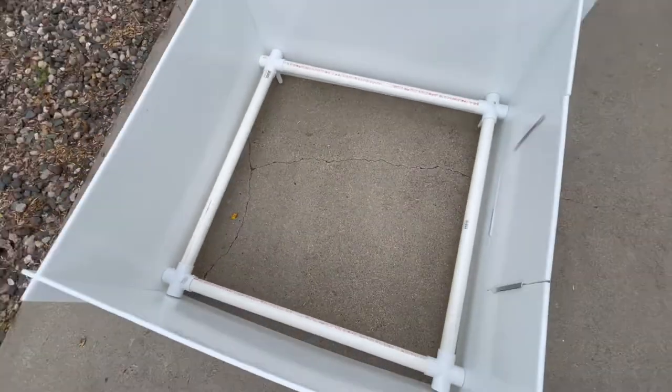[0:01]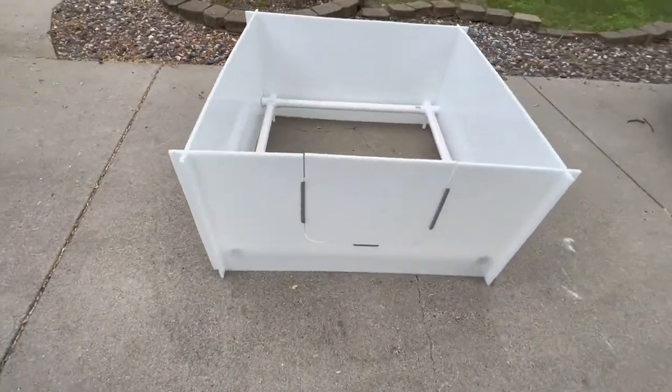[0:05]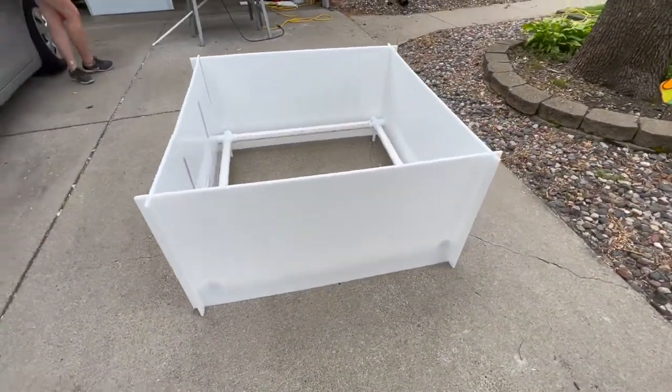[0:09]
Hi, so this video is going to show you how to make a whelping box for a pregnant dog to have her puppies in. And this is the box that we made.
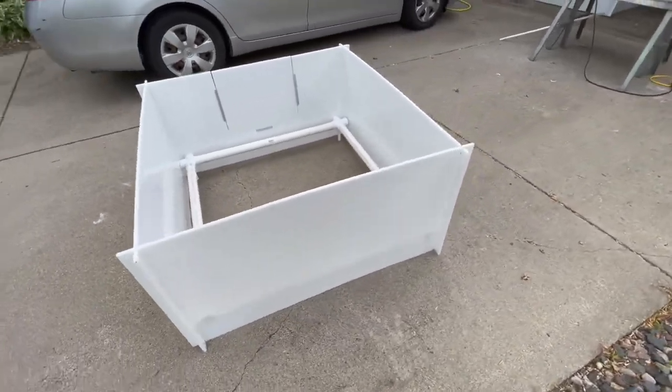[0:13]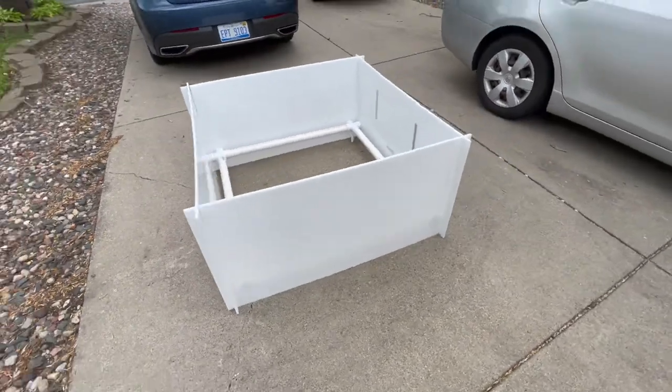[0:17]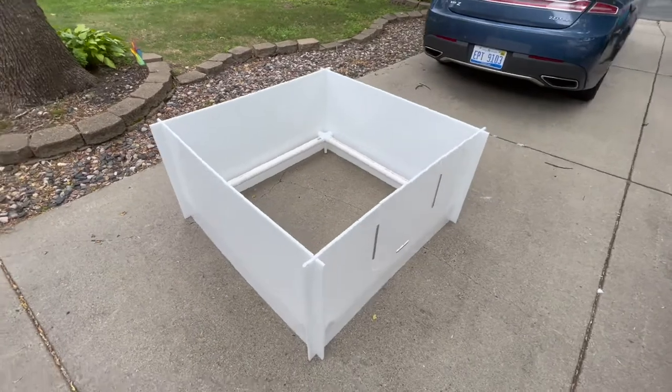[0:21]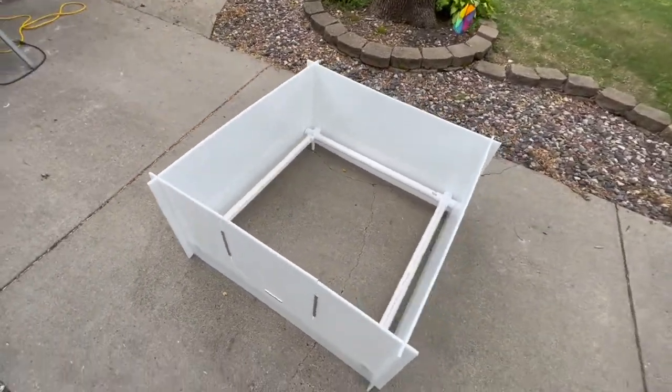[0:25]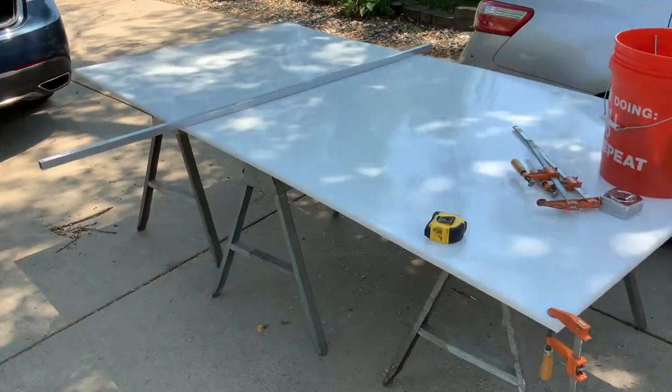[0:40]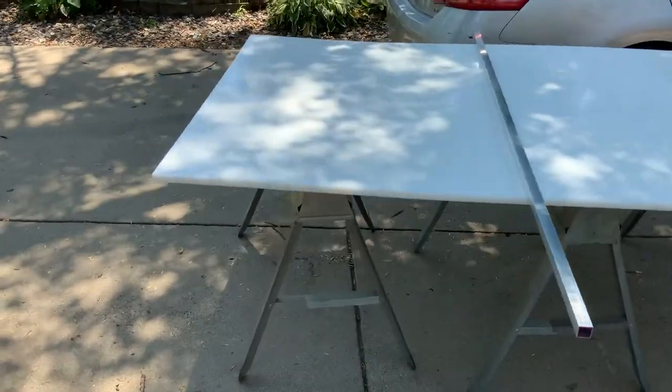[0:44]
So here is our supply list, so everything that you'll need to make the box, including all of the measurements for the plastic and the PVC pipes, and all of the tools we used. So here we have all our supplies set up to start making the cuts.
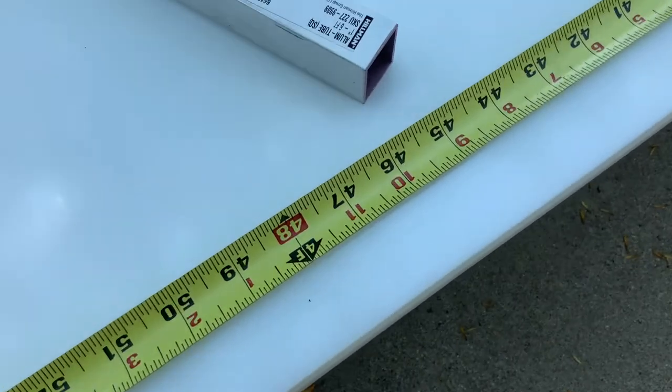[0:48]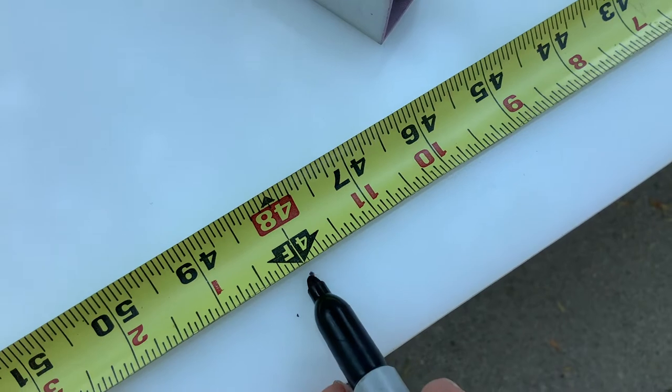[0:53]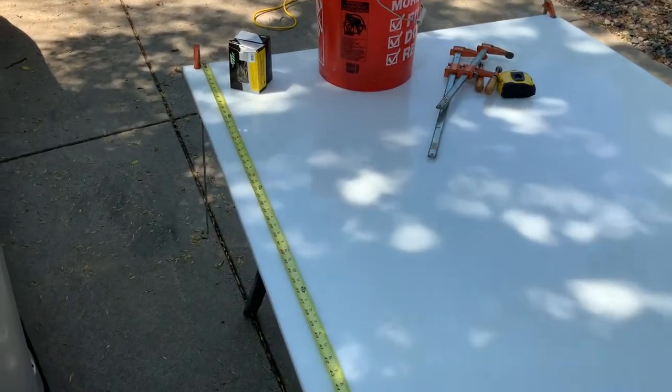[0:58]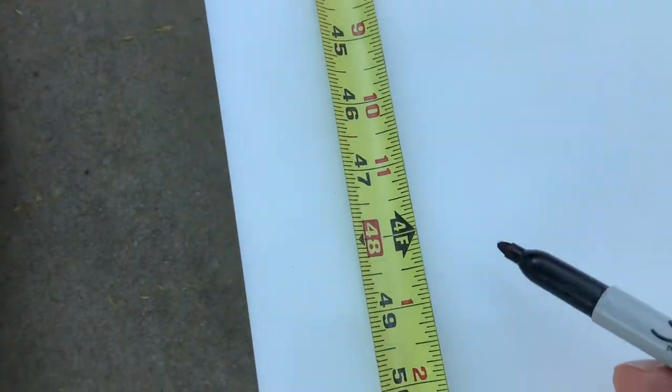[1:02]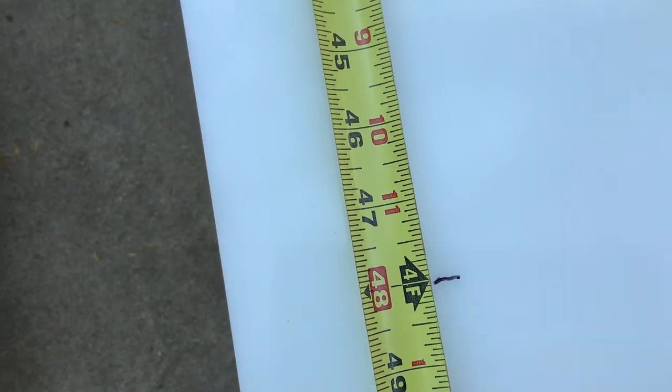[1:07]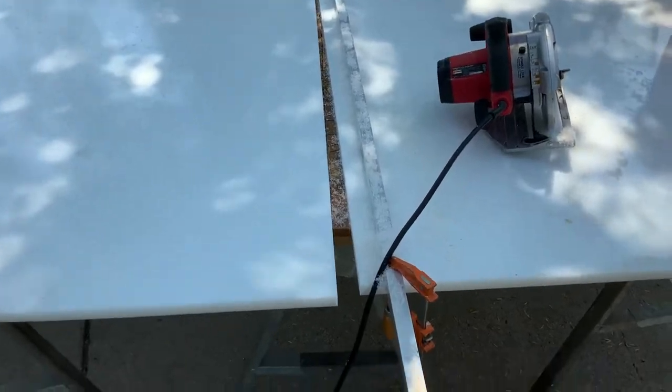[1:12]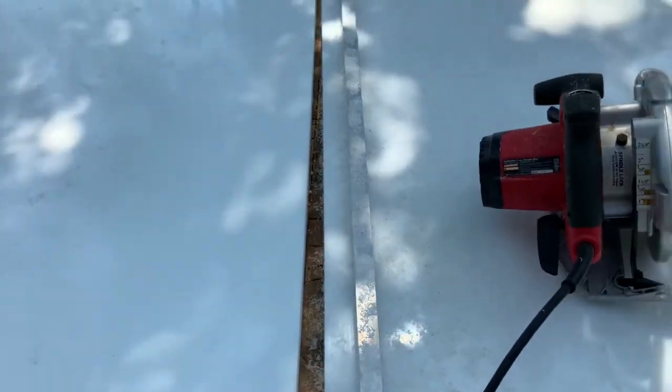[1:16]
So you're going to want to mark halfway at 48 inches for the first cut. And then you're going to go to the other side and mark 48 inches on that side as well. All right, so now that we cut that, we have our 4x4s, and now we're going to make these into 2x4s.
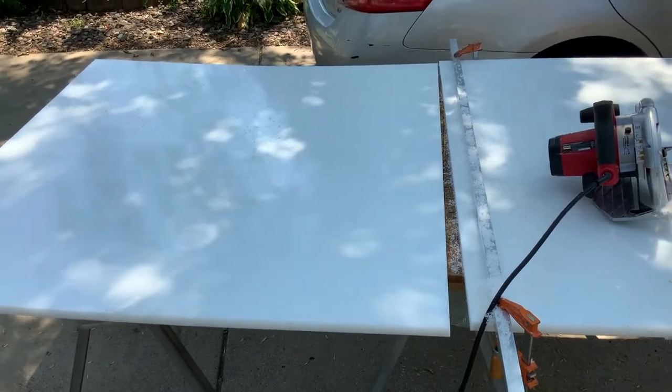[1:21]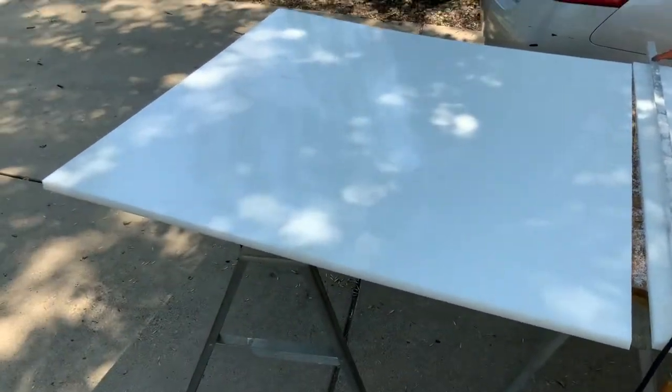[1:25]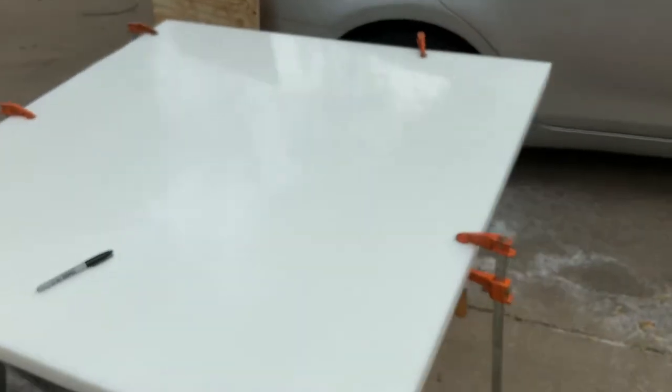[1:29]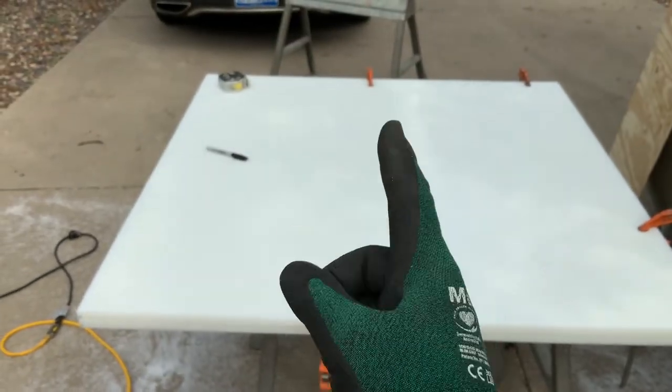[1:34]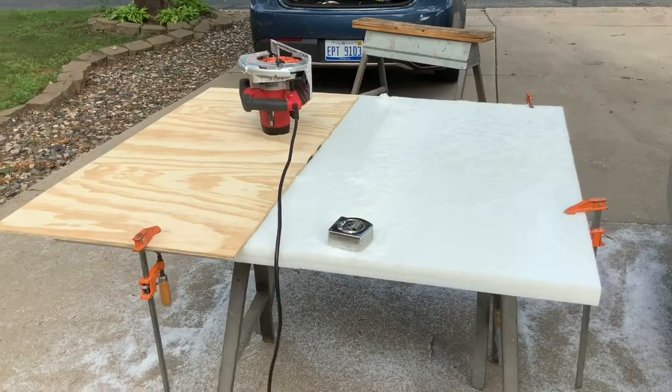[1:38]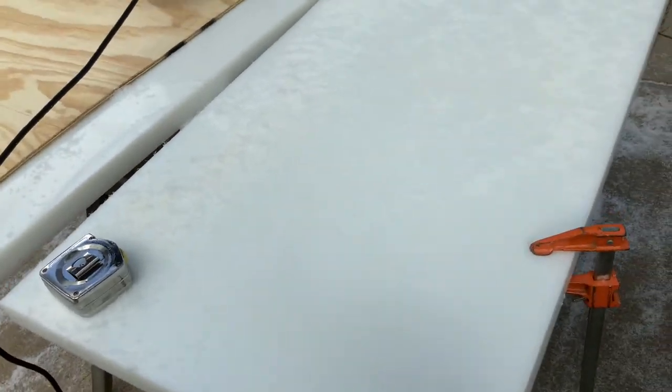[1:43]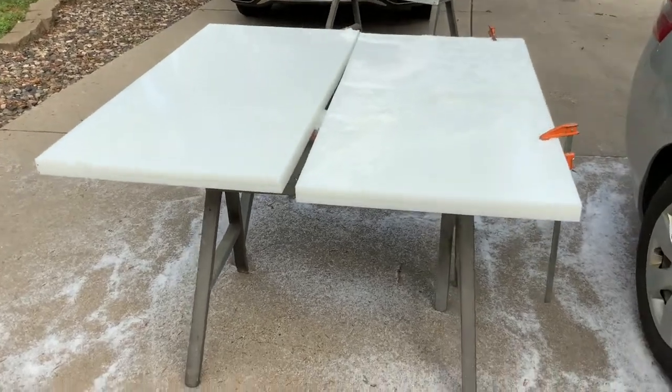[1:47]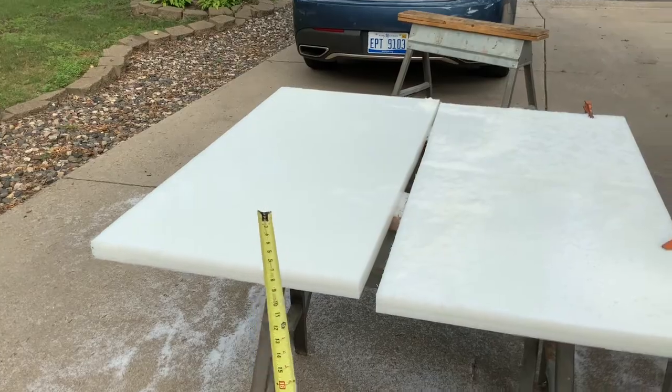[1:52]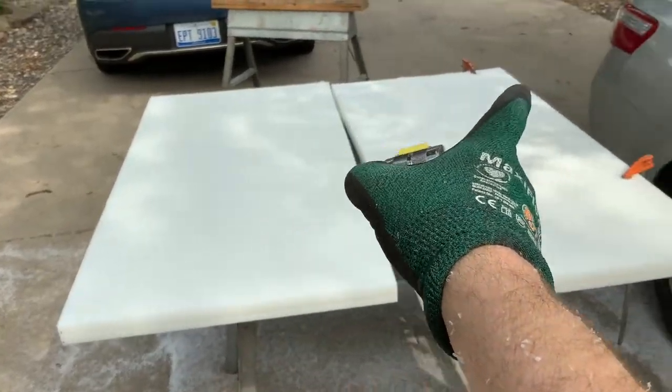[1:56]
So now we're going to turn these into 2x4s, so mark at 24, the halfway point, and then that's where you're going to cut down the middle. So then here is the cut we made. And now we have our 4 foot panels. So once again, in this video, we're making two whelping boxes, so there's a whelping box there and a whelping box there. So now we're going to cut the interlaces so the panels are able to go together.
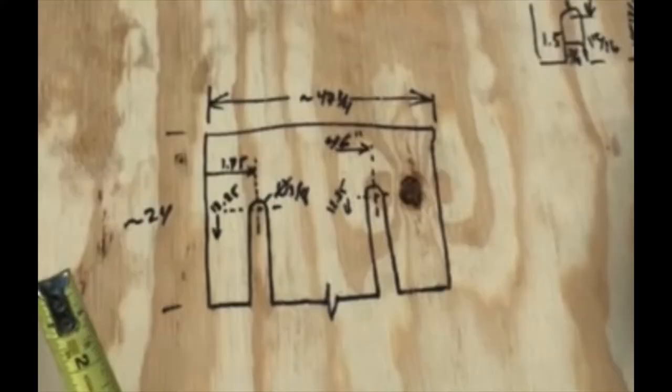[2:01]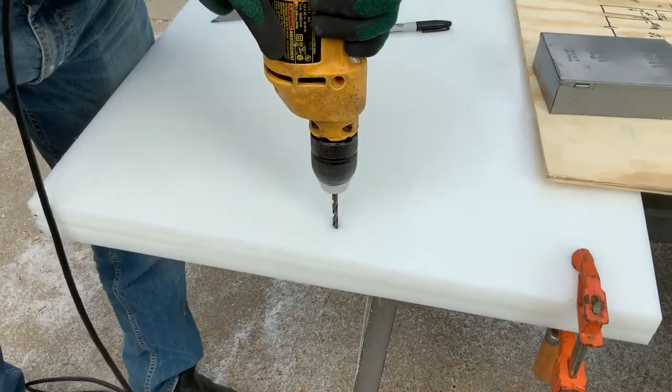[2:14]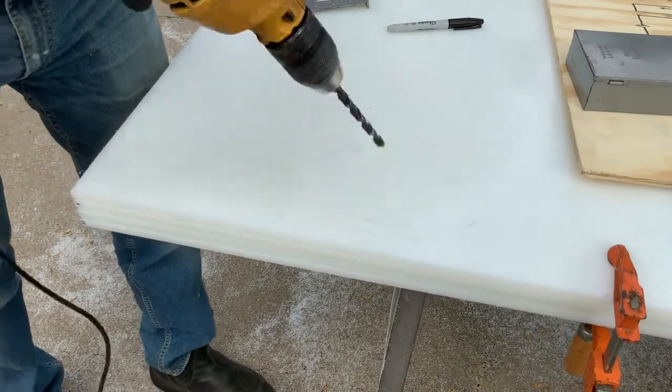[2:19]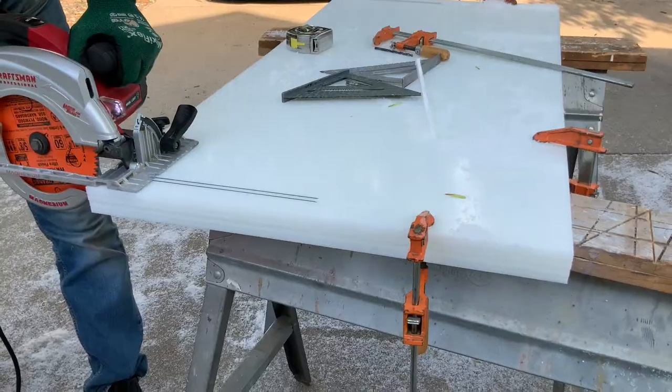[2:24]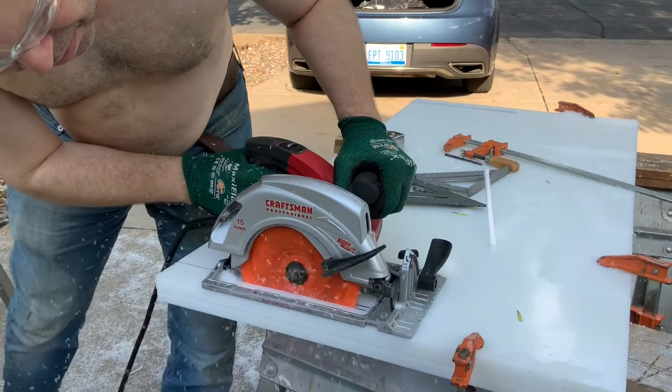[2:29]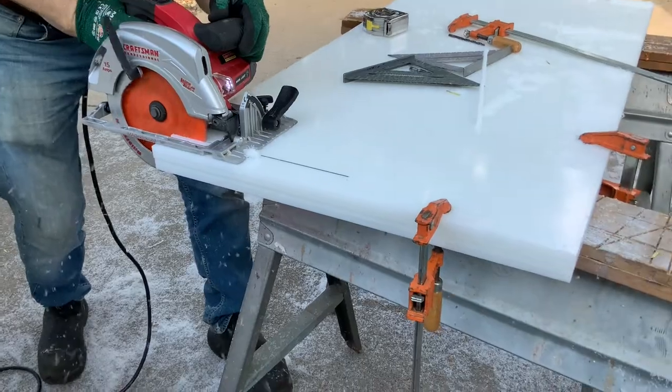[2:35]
So here is the diagram for the interlaces. They are 1/2 inch wide, 12 inches down, and 1.5 inches from the side. So here we are making a guide for the end of the interlace, and we start with a smaller bit and we use bigger bits as we go on. So now we made an outline and we are making the cut. And you're going to repeat this on the rest of the panels.
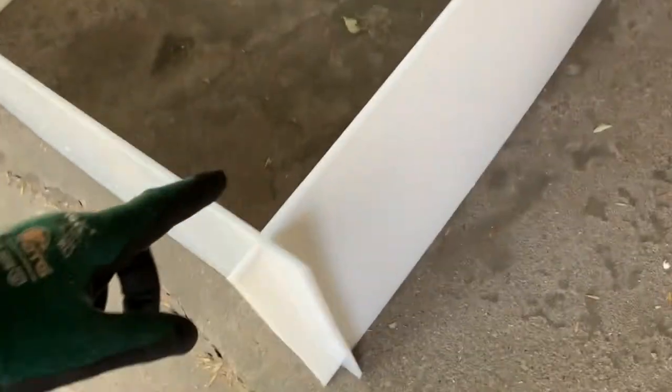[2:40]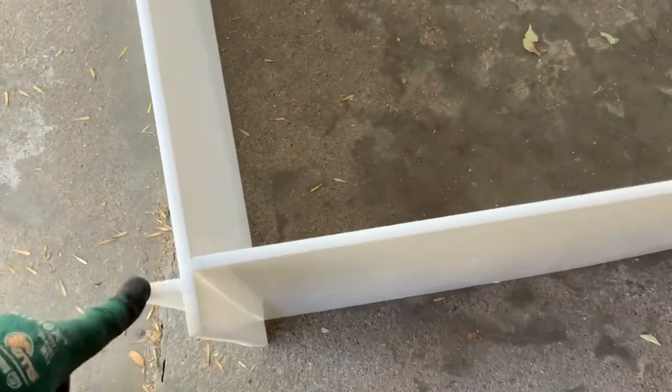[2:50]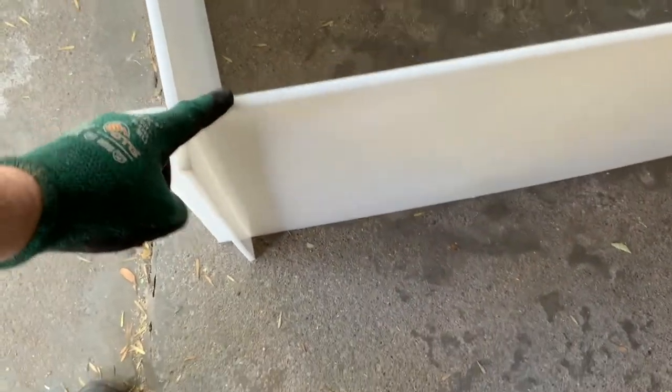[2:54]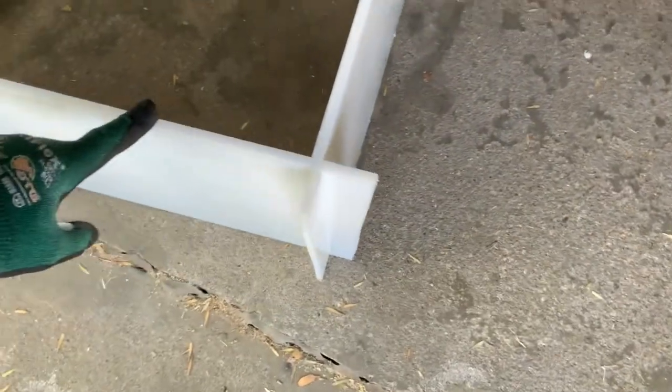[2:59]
So now we're gonna get ready to cut the mama door. And when you choose which one you're gonna cut it on, you wanna make sure that it is solid at the top, so the cut is at the bottom instead of the top, so it doesn't have a weak point like that one does. Because we want to make sure that the door will still be able to go in and the box will stay standing. So you're either going to want to choose that one or that one.
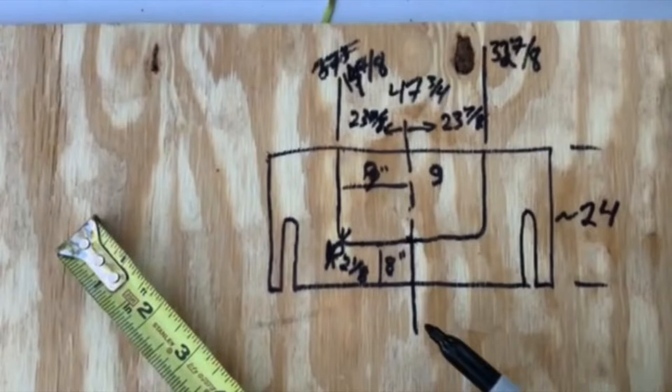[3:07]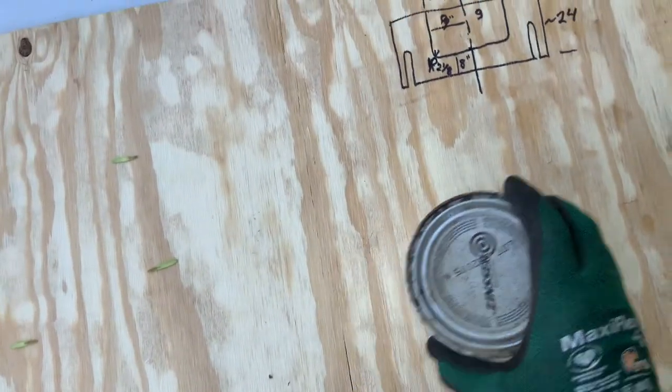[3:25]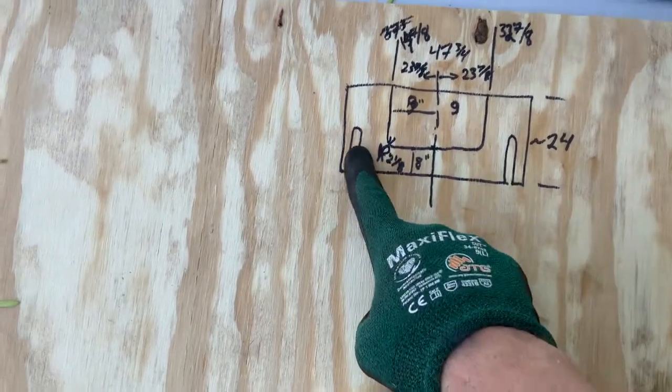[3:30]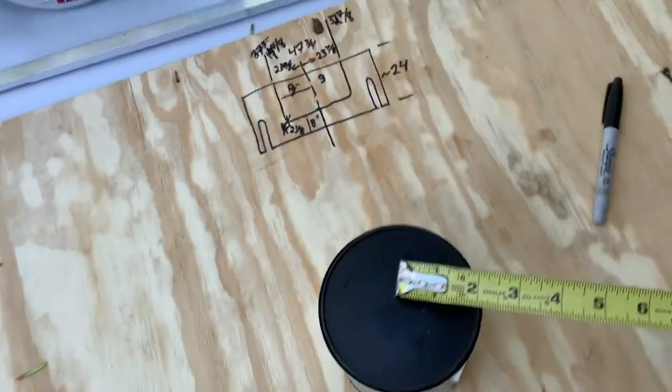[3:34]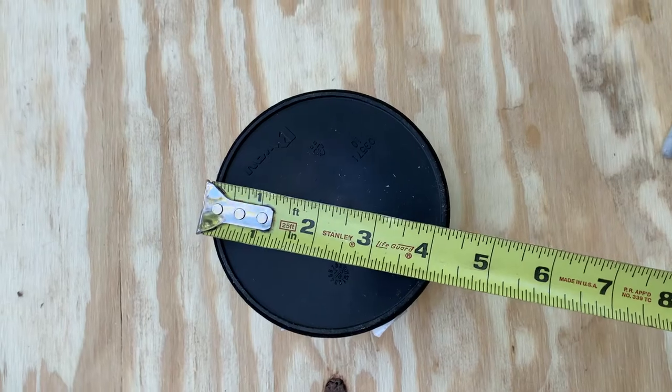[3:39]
So here is our diagram for the mama door. It's 8 inches from the bottom, so the puppies can't get out, but the mama can still come out. It's 18 inches wide and then 16 inches tall. And we didn't have a fancy saw to cut the corners, so we used a can to make the outline. So the diameter of this can is 4 1/4, so the radius is 2 1/8.
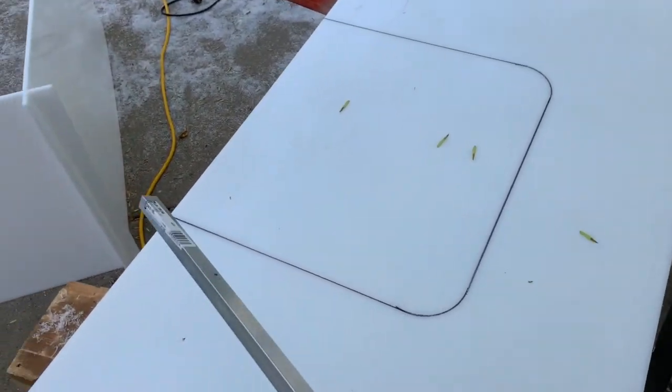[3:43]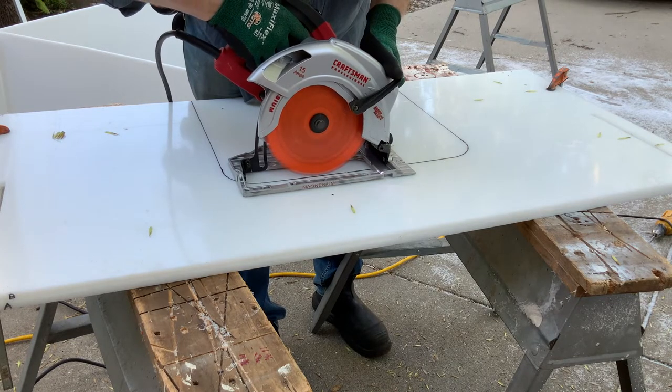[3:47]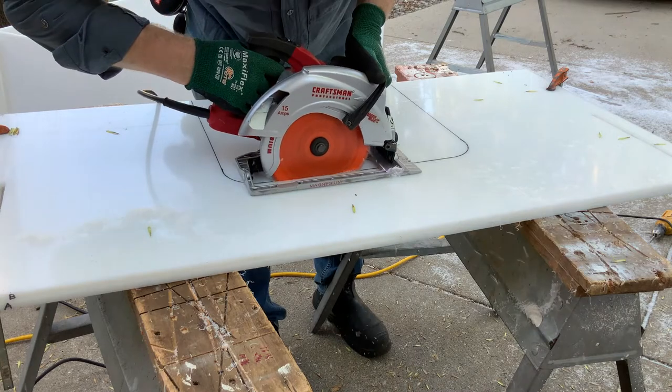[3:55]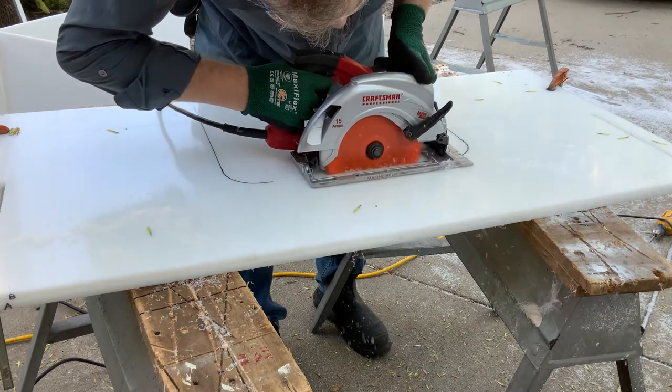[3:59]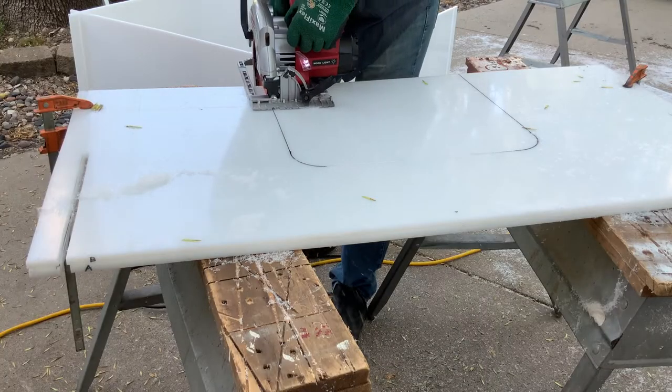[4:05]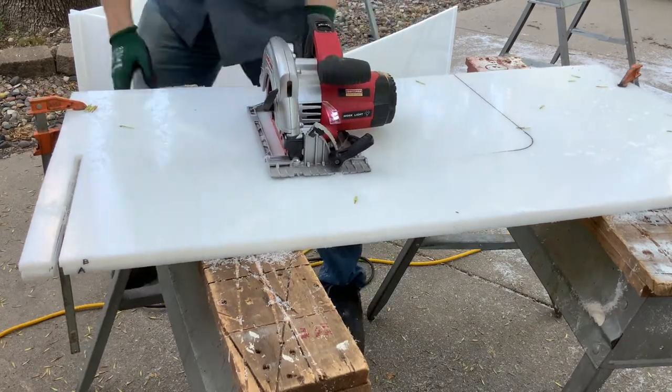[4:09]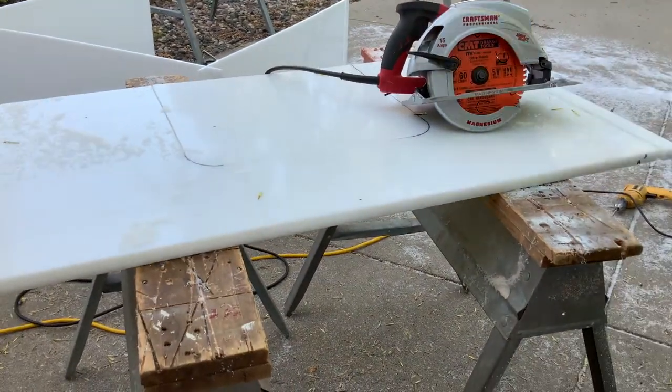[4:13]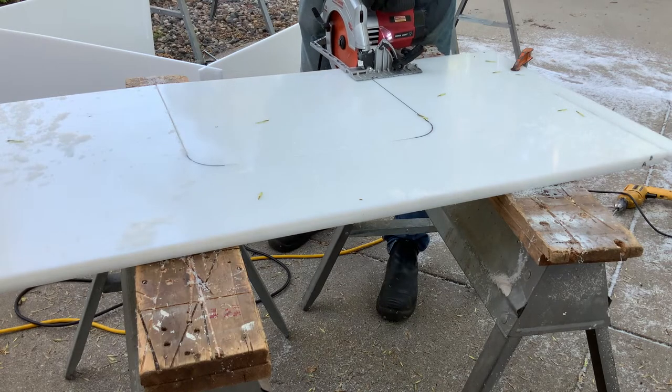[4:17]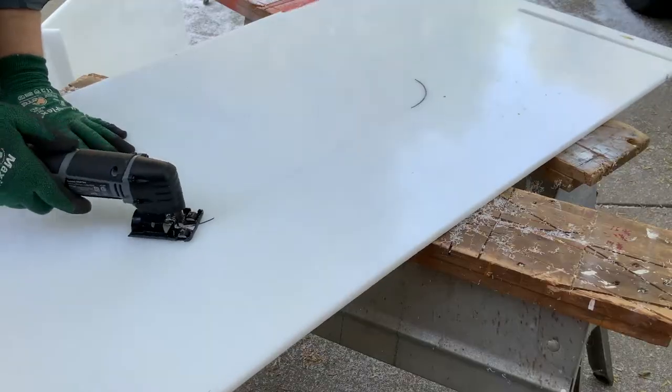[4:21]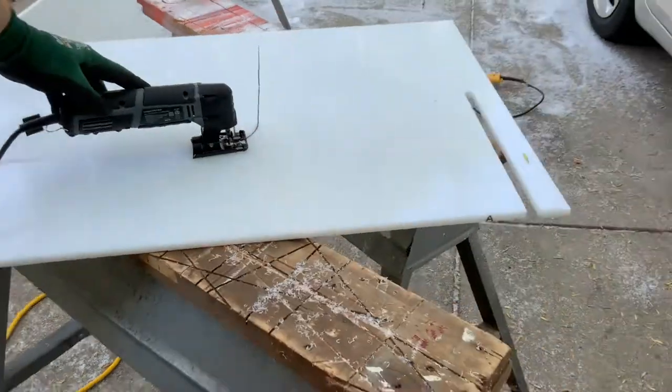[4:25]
So as you can see here, the lines are all traced out. So now just cut out on that outline. We used this saw to cut the straight lines, and then a smaller handheld saw to cut out the curves. So now we're using a smaller handheld saw to make sure the corners are nice and round like we want them to be.
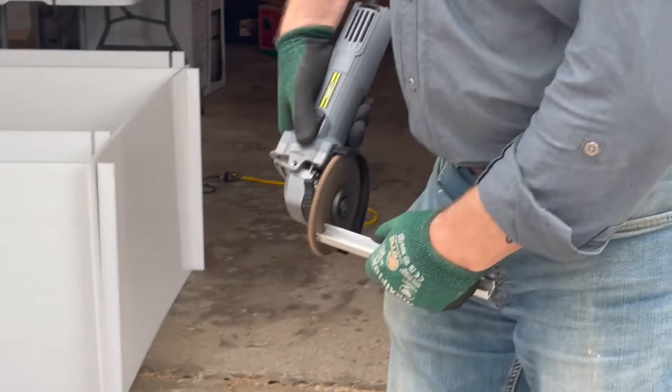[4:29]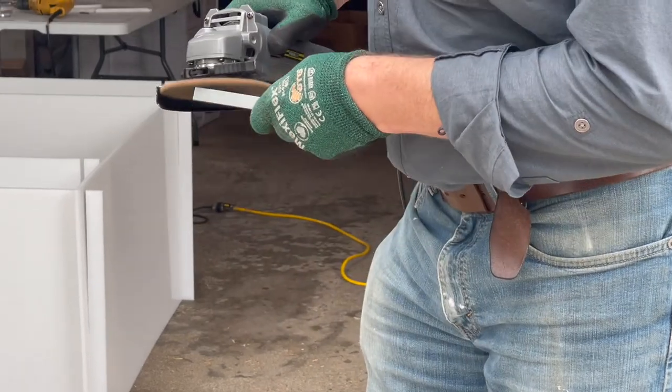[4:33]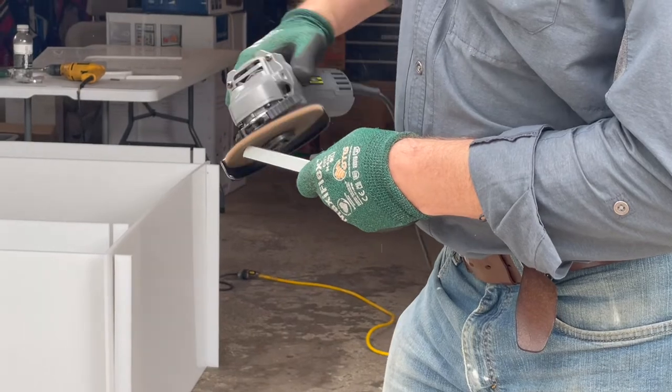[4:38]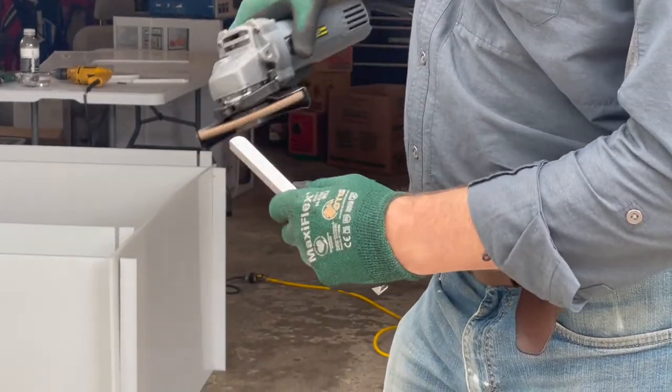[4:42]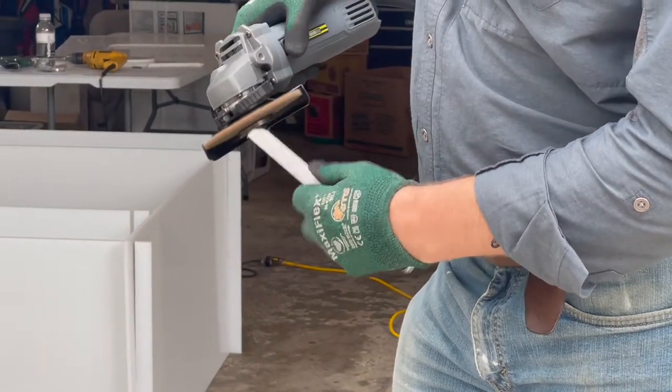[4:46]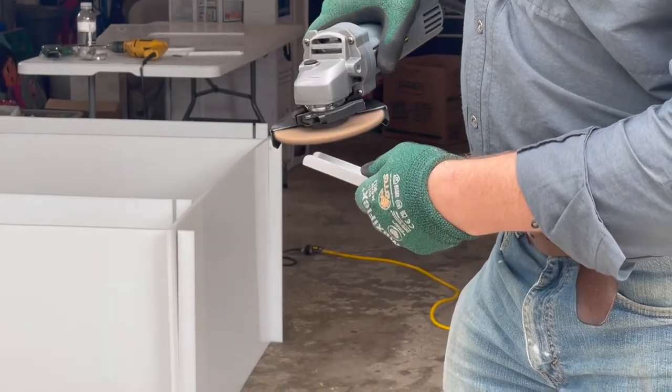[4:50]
So now we are sanding down the channels to make the corners rounded so they can turn into our door guides so we can put them on the door. So we're just using this electric sander, and you can see there we are rounding the corners. And you're going to want to do this for each of the three door guides.
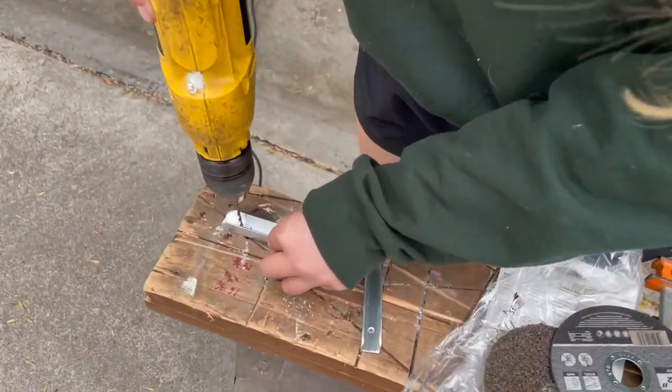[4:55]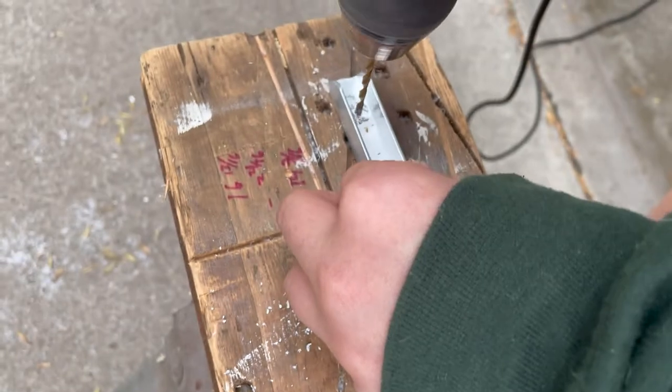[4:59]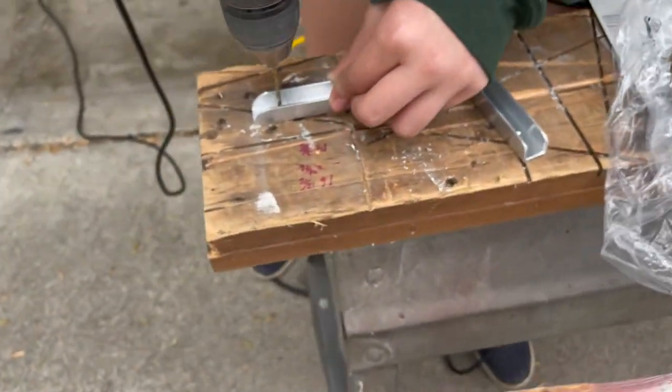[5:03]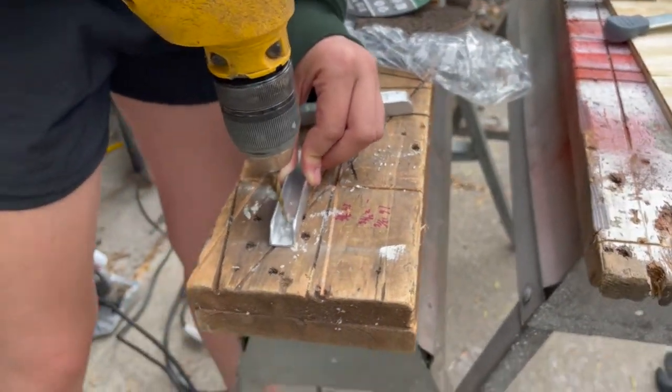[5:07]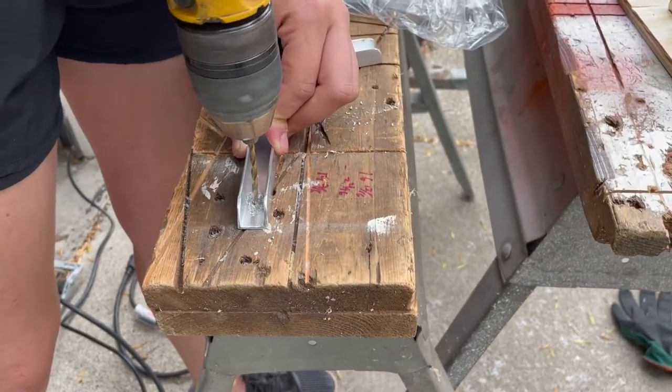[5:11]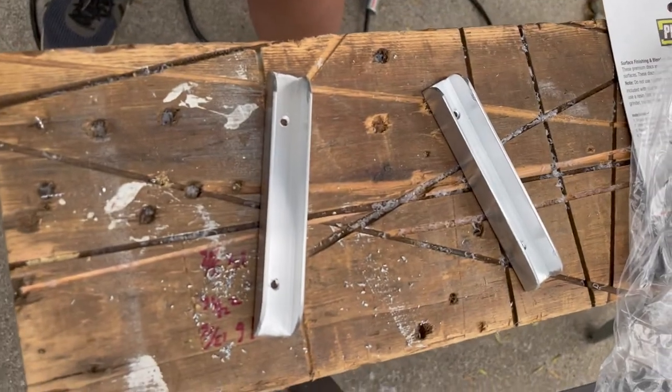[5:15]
So now you're going to want to drill 2 holes on each end of the aluminum channels so that this will allow them to be attached to the door when we screw them onto the door. And the important thing here is that you're making sure it's in the exact middle of the channel so it sits nicely on the door. And there are the finished ones.
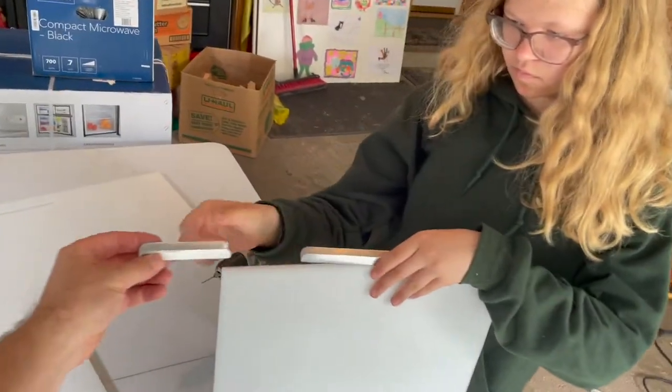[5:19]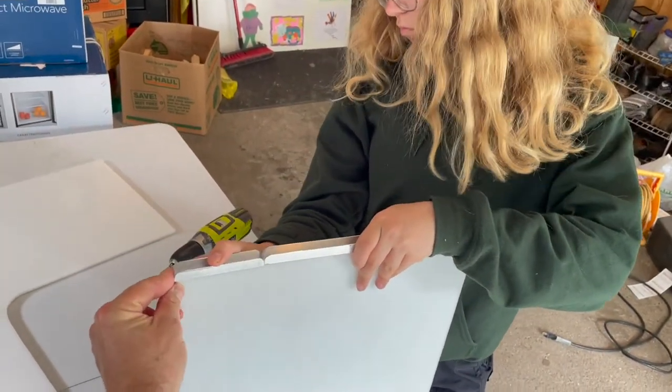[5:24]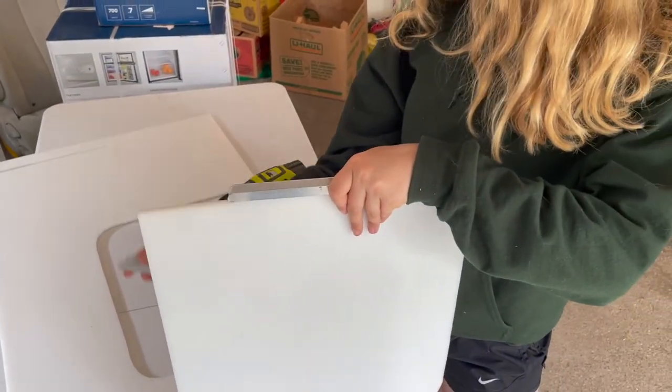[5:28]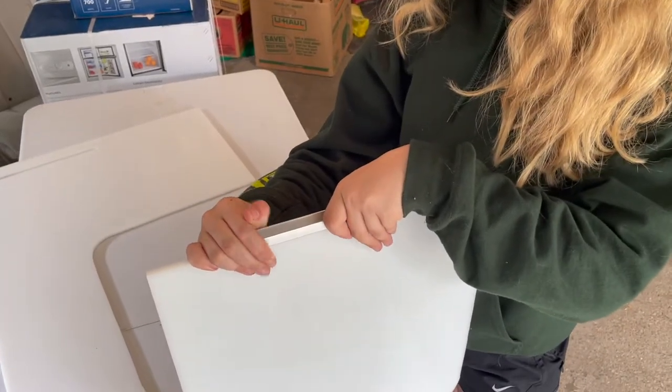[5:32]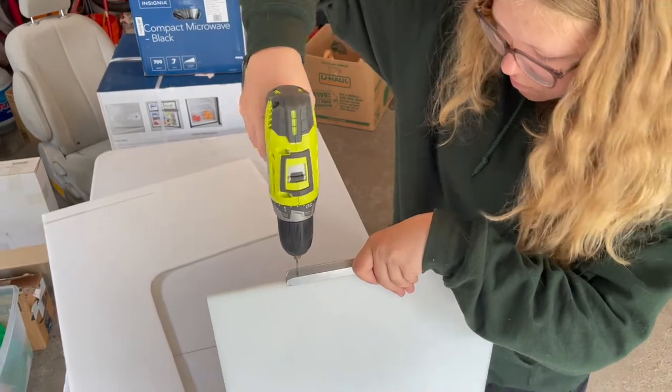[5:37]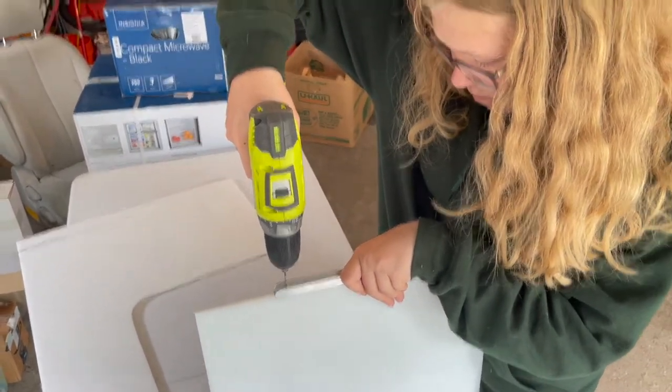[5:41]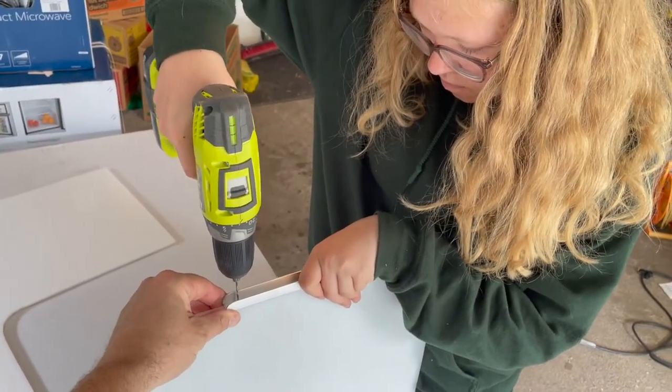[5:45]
All right, so now we're gonna get ready to drill it on. So we're using that smaller piece as kind of like a ruler to see where the middle is, so that we found the middle. So now we're gonna keep that there, pick up our drill, and just drill down to make a hole for our screw to go into. Make sure it's super centered, and then you are able to drill the hole.
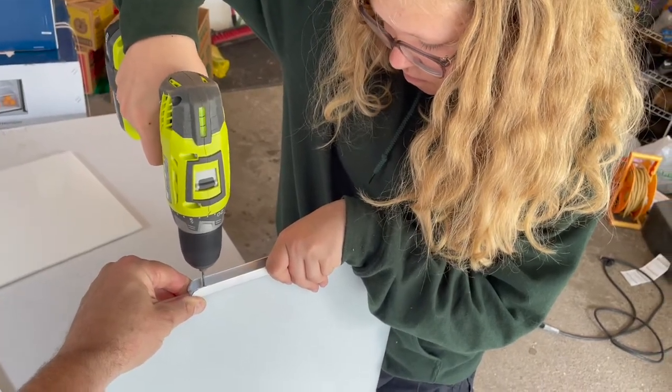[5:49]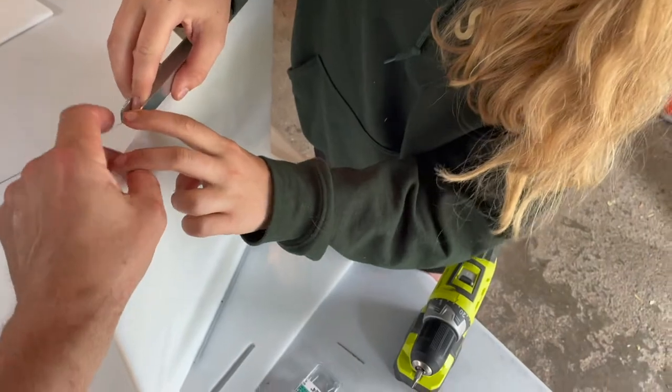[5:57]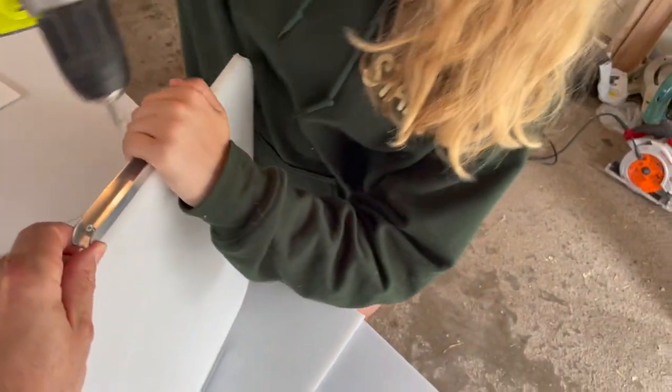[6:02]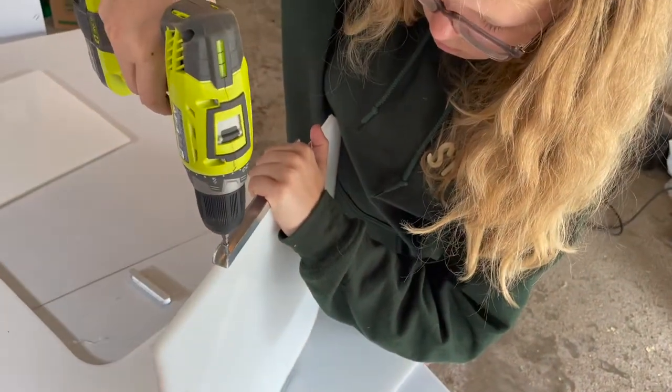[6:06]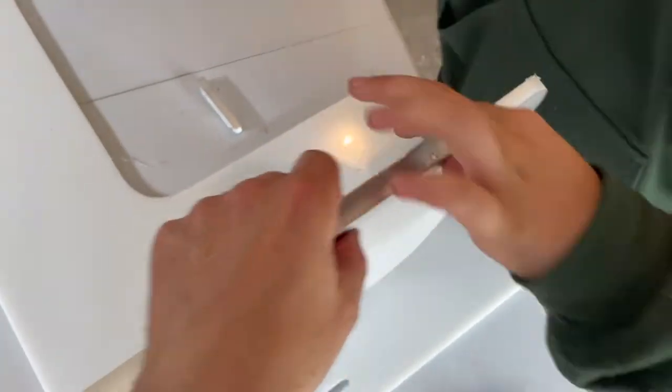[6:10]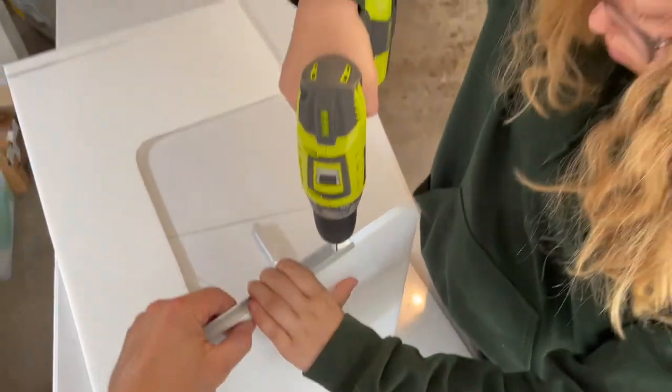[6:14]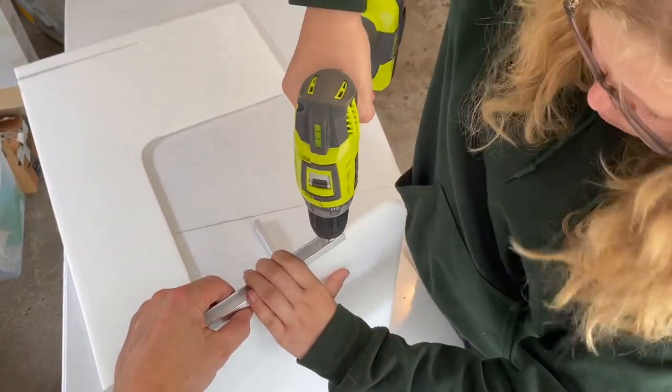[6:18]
Alrighty, so we switched our bit on our drill. We already have our screw in there and all lined up in the hole we just made, and you just need to drill that screw down. And then you're just going to want to repeat that process of drilling that hole and then drilling the screws in 5 more times for each of the door guides.
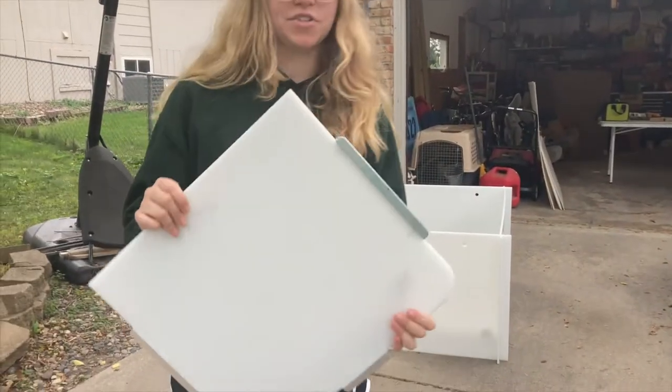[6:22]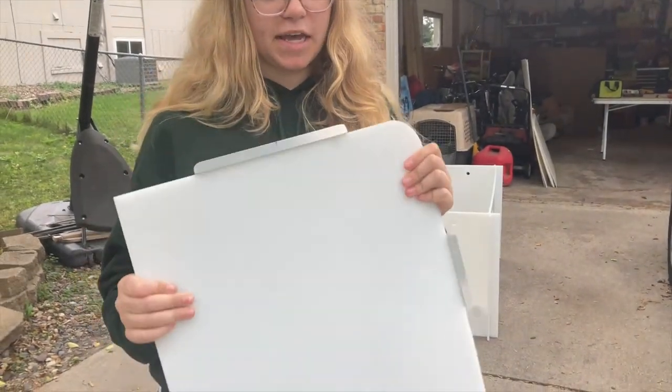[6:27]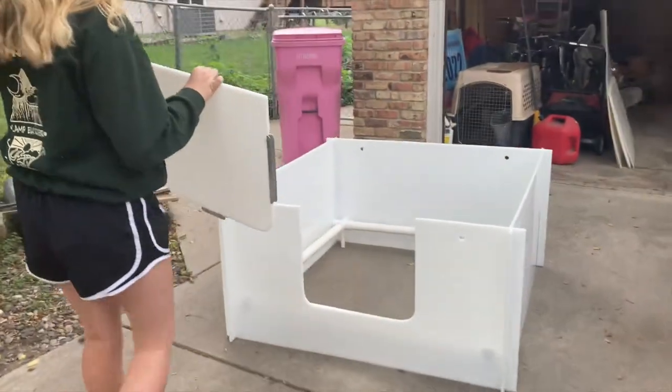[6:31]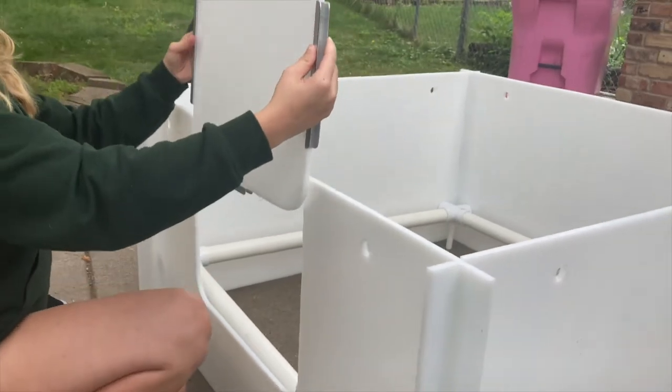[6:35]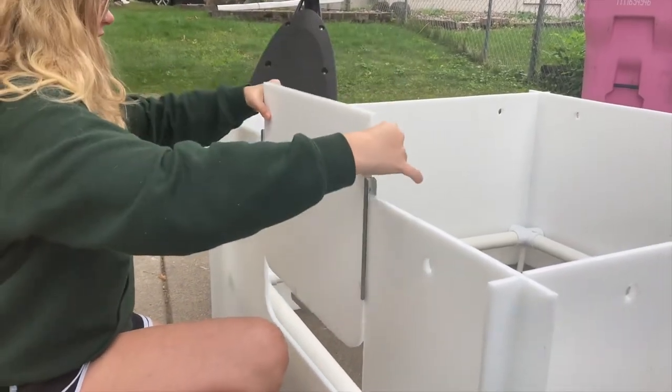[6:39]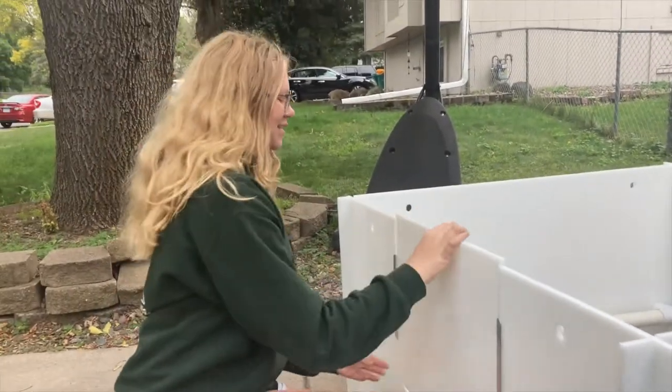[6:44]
So now that we finished our door and that we put on the aluminum channels to act as our door guides, we can come over here, and just how it goes on is you line up the aluminum with both sides of the door and slide it on down, and then whenever the mom needs to come out, you can just slide it out like that.
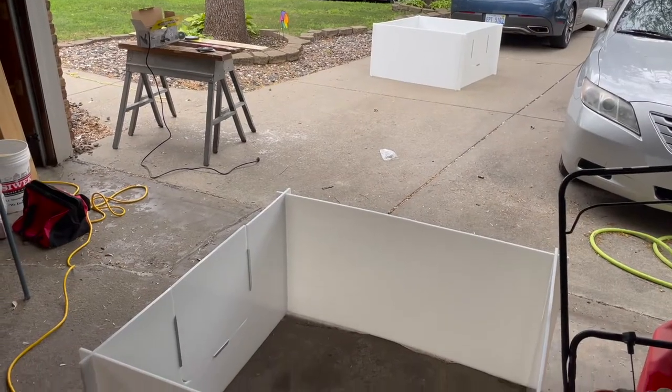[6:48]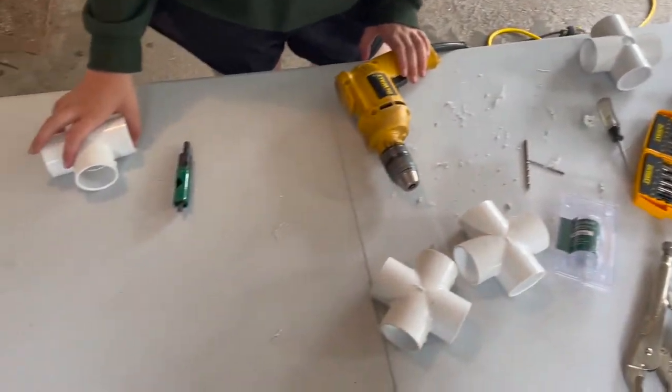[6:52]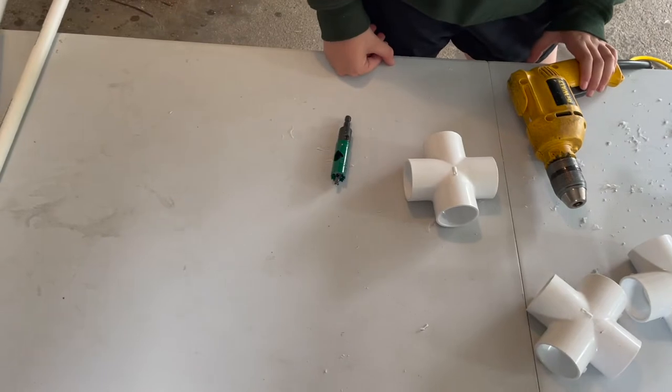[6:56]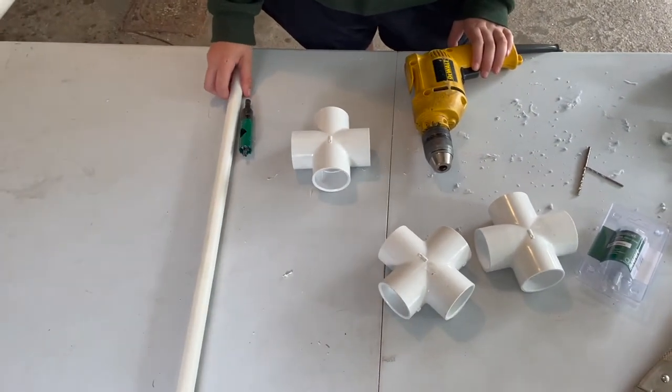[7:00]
Alrighty, so now that we are done with the boxes, we are ready to make the rails that protect the puppies. So these are all the parts that we are going to be using to make the puppy rails.
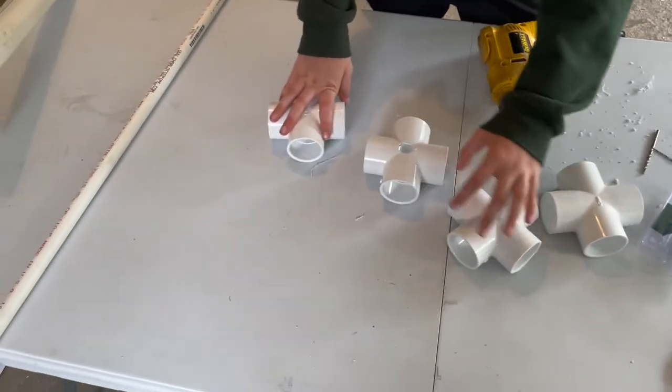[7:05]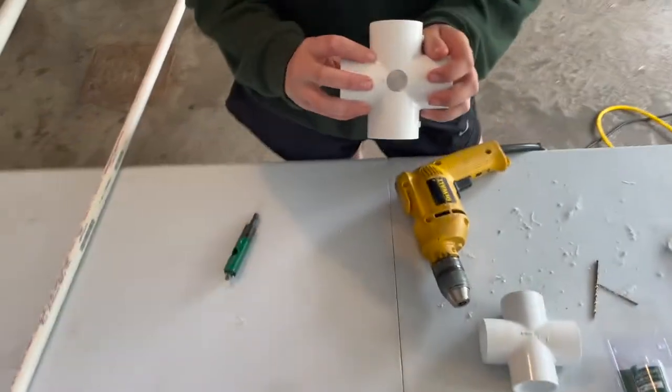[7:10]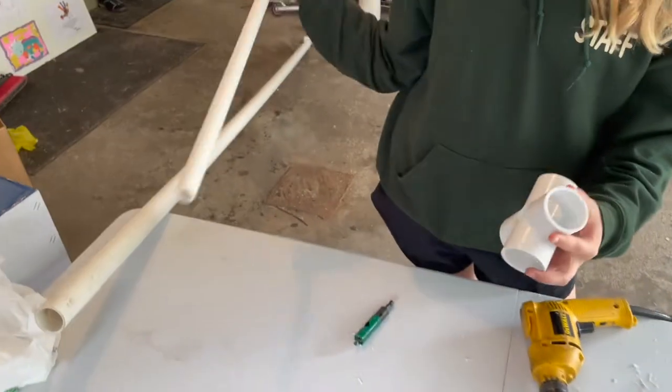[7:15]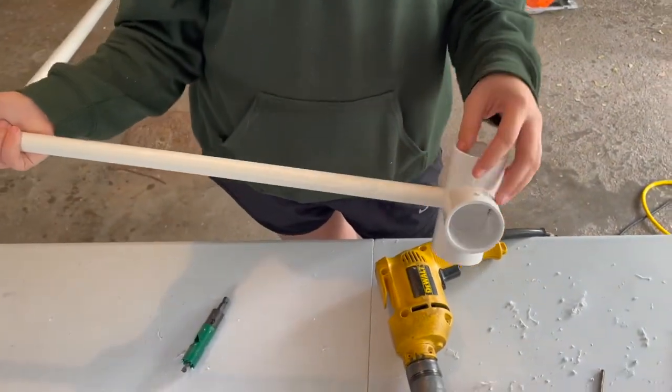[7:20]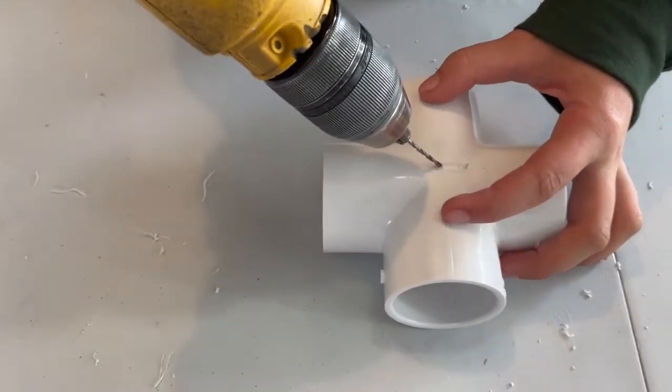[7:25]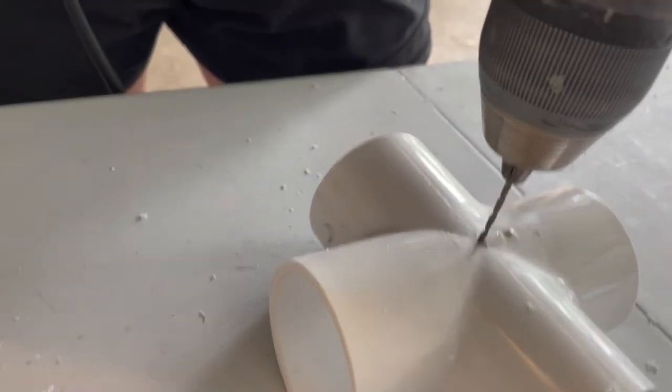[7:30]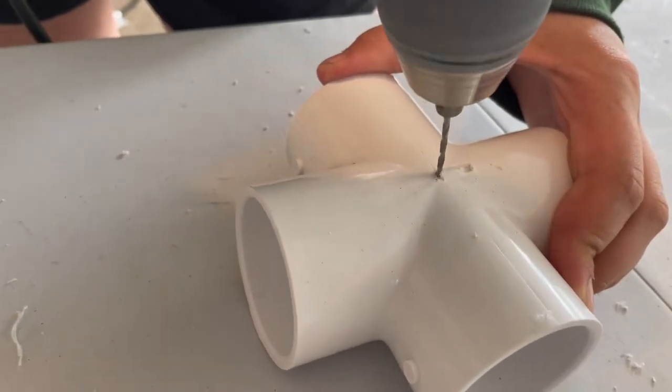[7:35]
We have these 4 cross fittings that are going to be in the corners of the puppy boxes, and we've done a test cut on one of them where we have this hole that is going to be used with this pipe, and that's going to go in it, and this is what will establish the height of the bars in our puppy box. So to get this accurate hole, we use this really small bit and we just make an indent in the cross fitting. And then we drill a small hole.
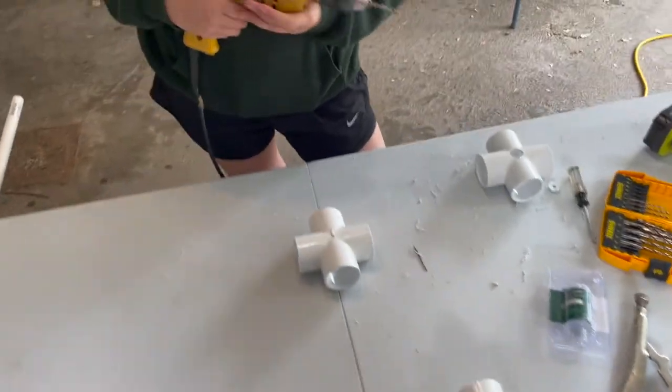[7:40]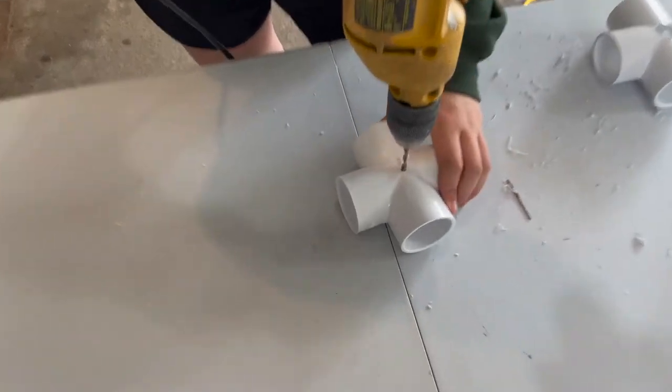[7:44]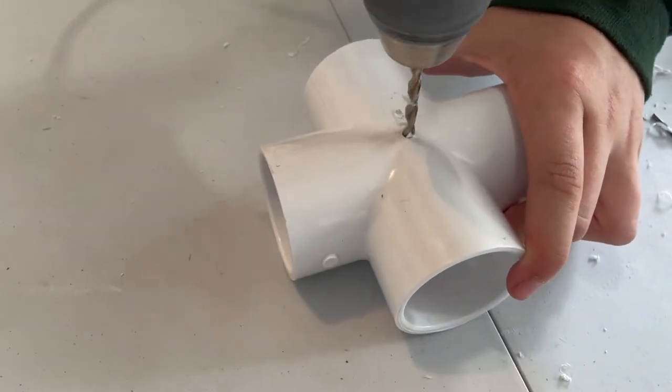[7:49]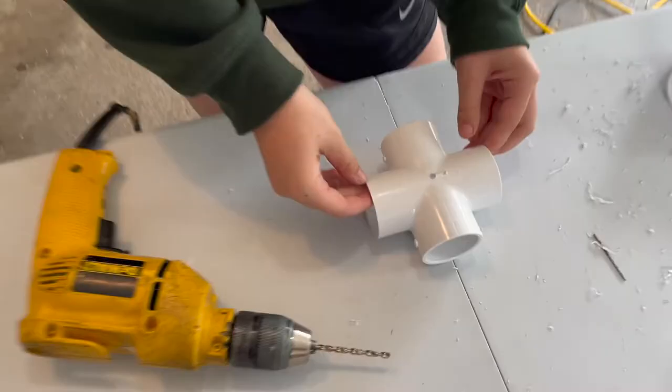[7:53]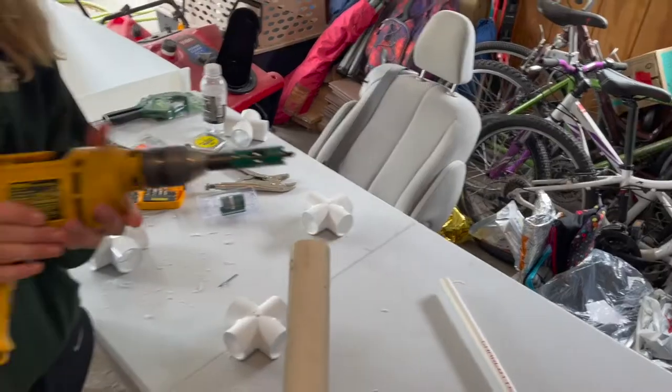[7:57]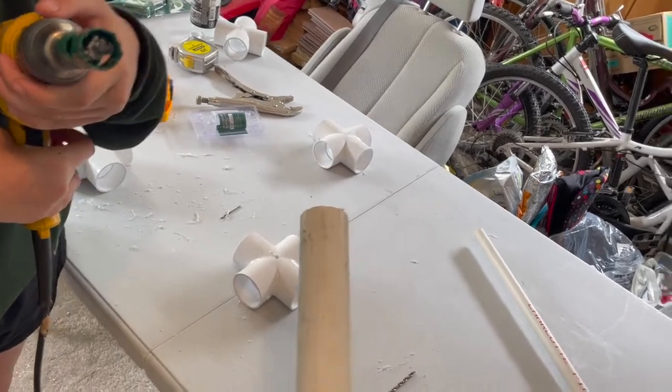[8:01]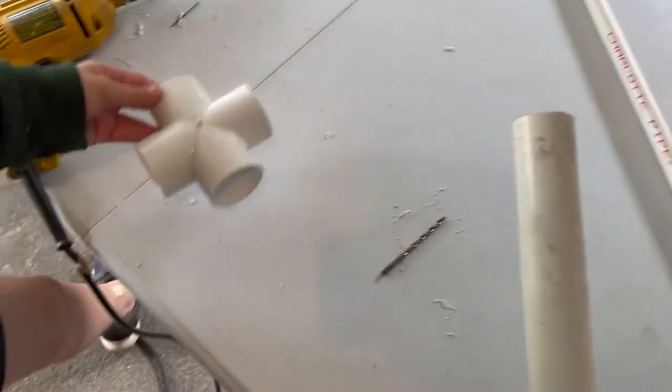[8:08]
So now we switched our bit out for a slightly larger bit, and we're just going to do the same thing, go over that hole we just made and drill down to make the hole a little bit bigger. So now we are ready to use the final bit. Now we are ready to drill the final hole that will allow the small pipe to go in and be able to become the feet that will hold up the corners in the whelping box.
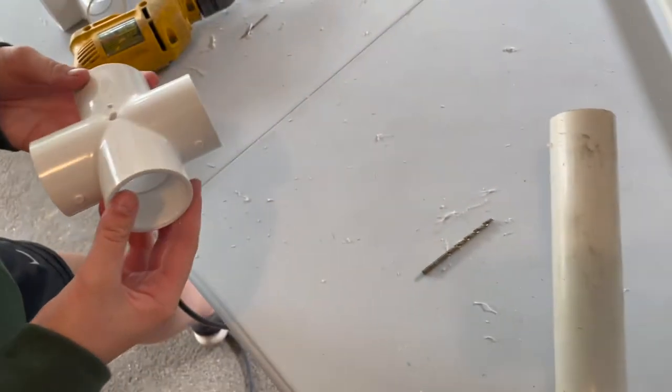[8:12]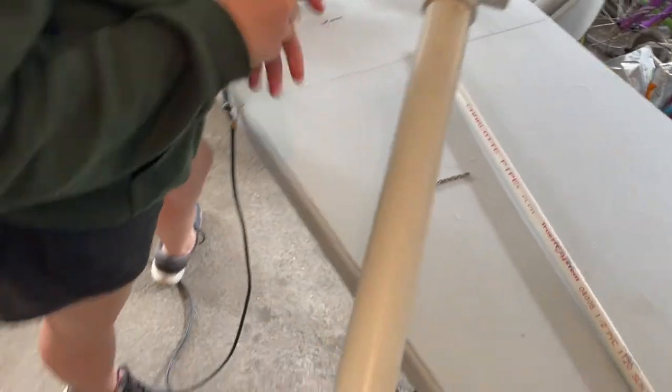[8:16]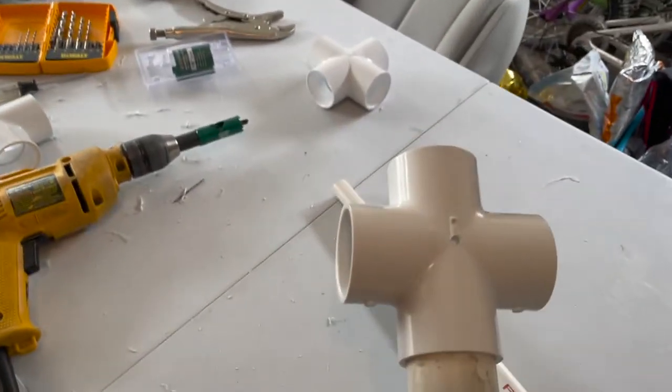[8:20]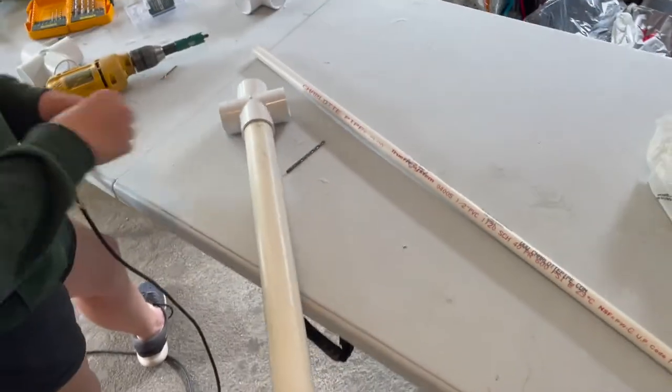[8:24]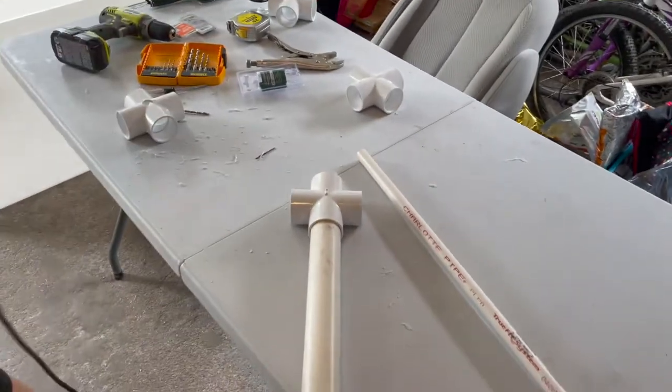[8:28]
So now that we have an accurate center hole in the fitting, we need to make a hole large enough for that small pipe. So while we drill, we're going to use this long pipe as leverage because that bit is going to have a lot of torque on the fitting when you cut it. So you're going to want to have someone hold the pipe while you drill the hole so that the fitting does not rotate with the torque reaction.
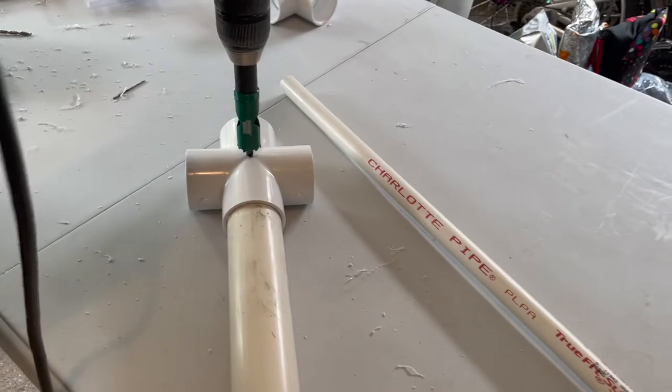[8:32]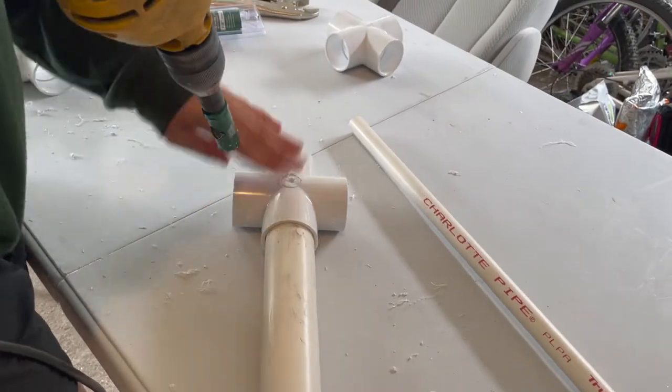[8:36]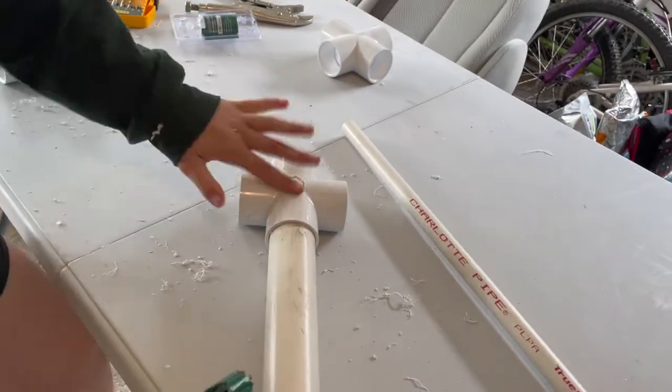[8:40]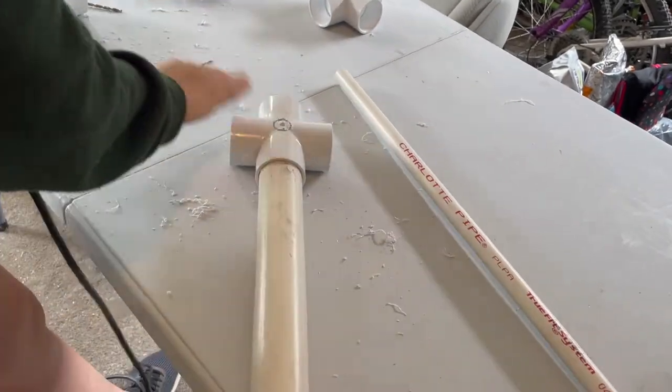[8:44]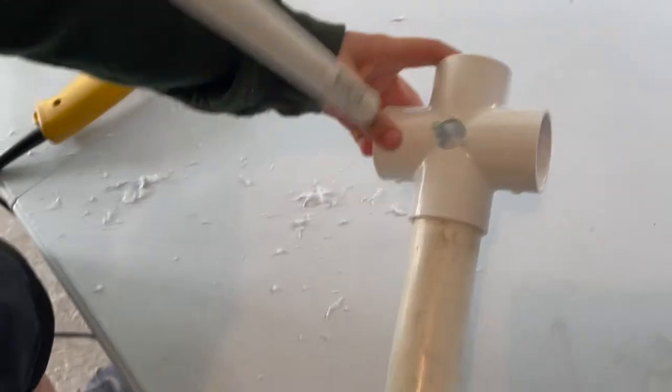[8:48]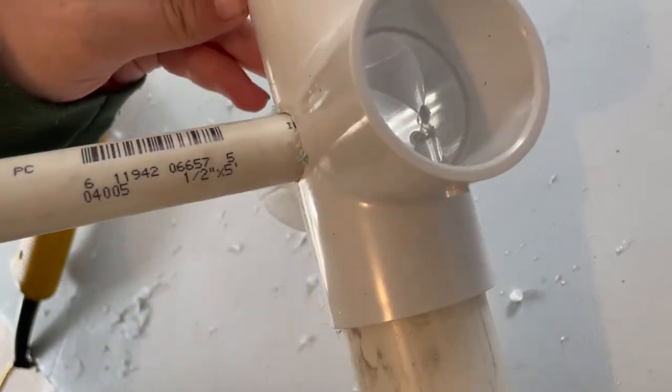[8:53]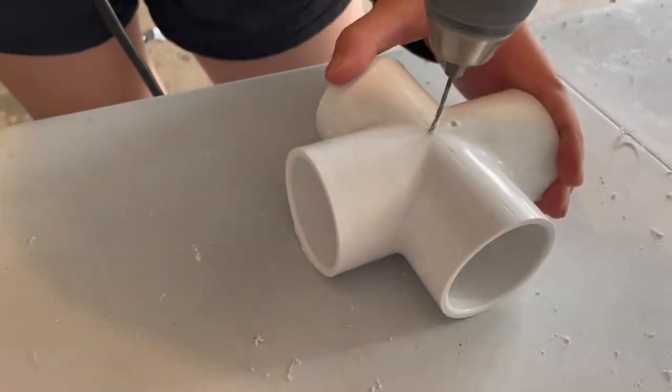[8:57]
And now we can do a test fit with the small pipe. And ta-da! And you're just going to repeat that 3 more times for the other corners.
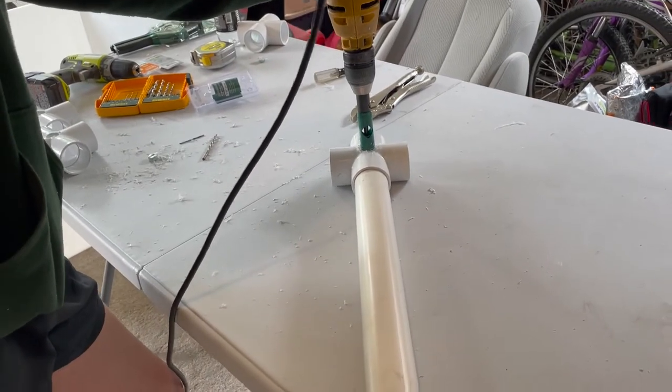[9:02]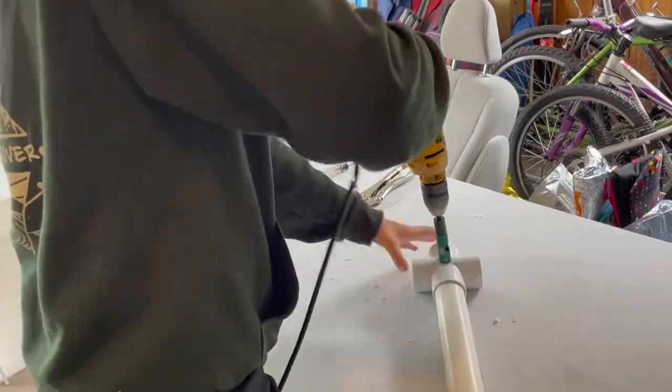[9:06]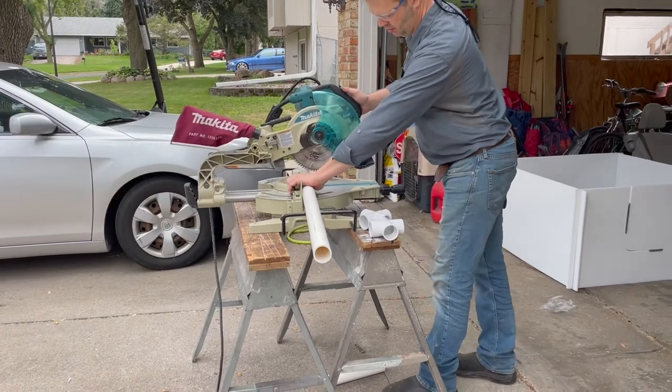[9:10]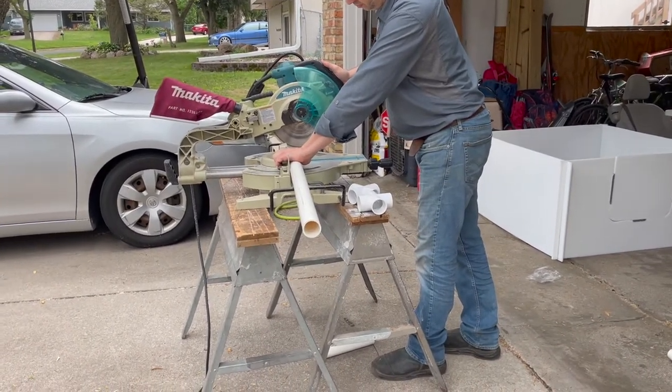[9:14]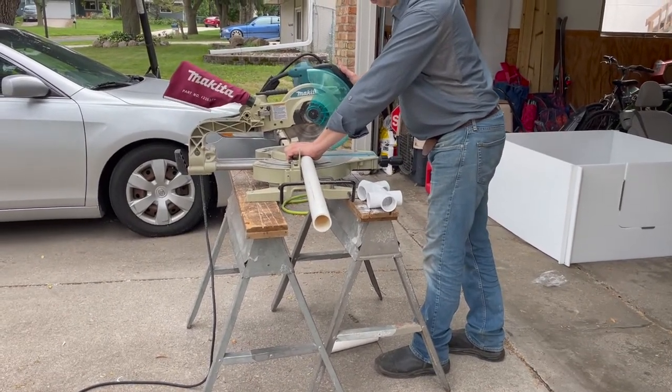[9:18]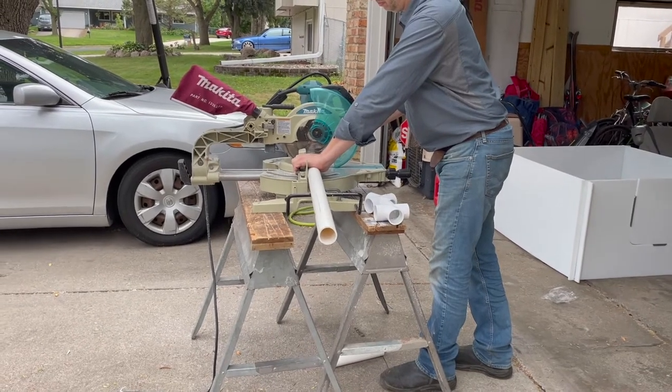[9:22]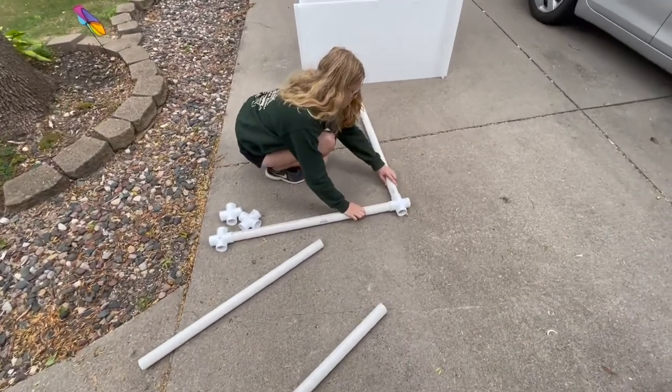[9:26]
So now we're going to cut our PVC pipes to 36 3/8 inches long so that they can become our puppy rails. And you're going to want 4 of those. So here I am putting it together for a test fit.
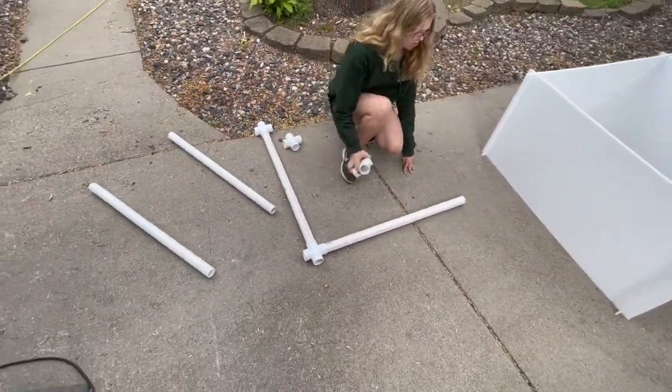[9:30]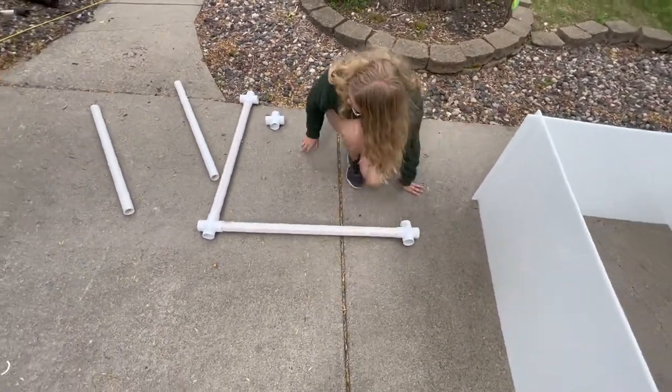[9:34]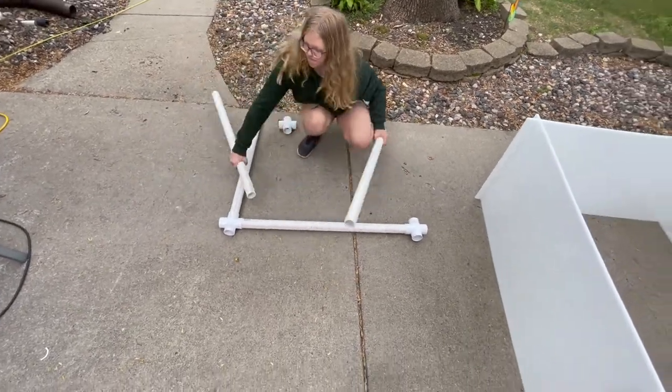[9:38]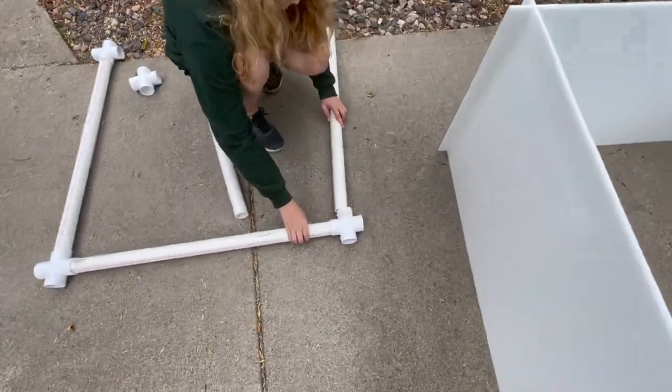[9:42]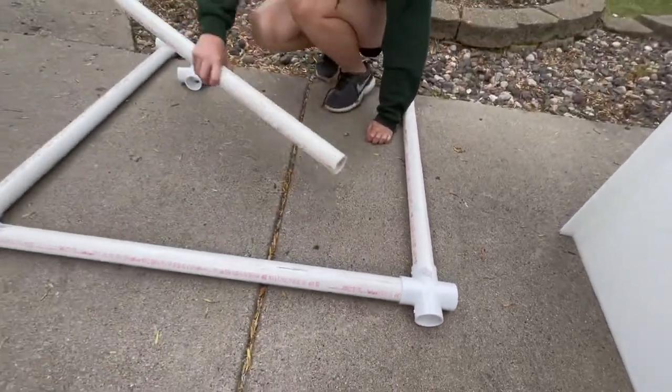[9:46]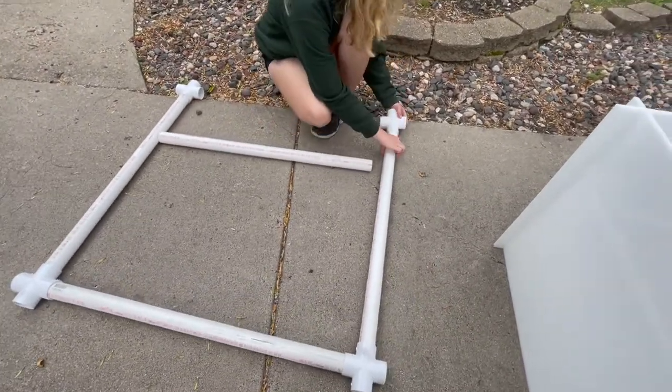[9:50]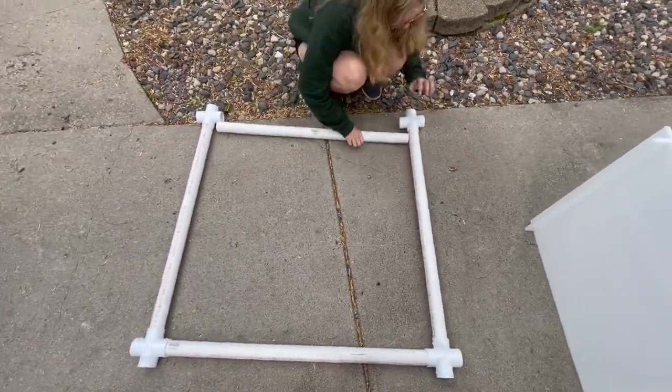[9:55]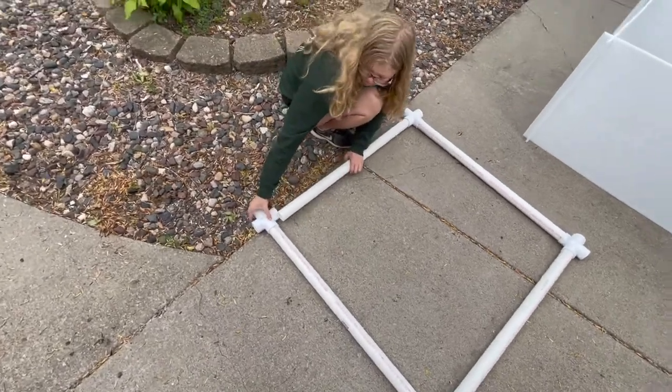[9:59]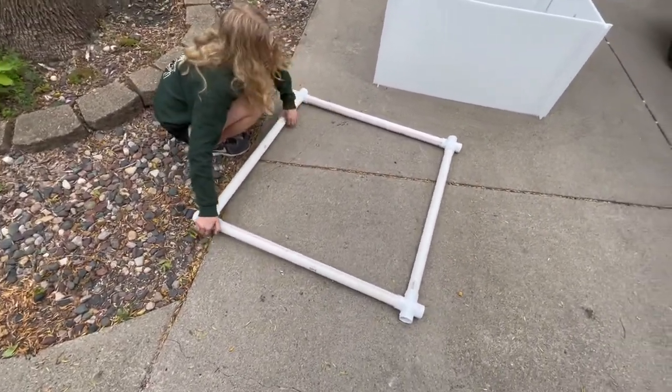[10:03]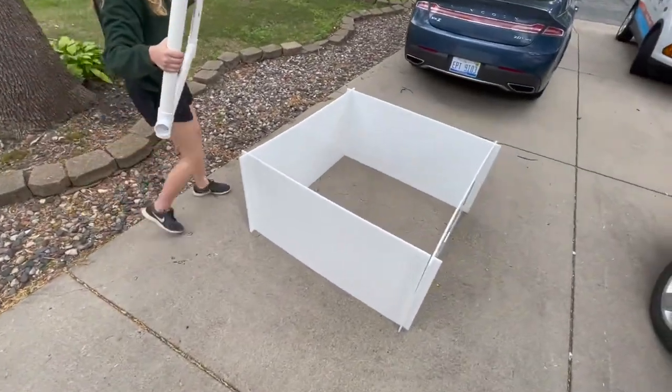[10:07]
I like dynamic shots. That's why I'm moving around. And then you can kind of pop them together. Yep. There you go.
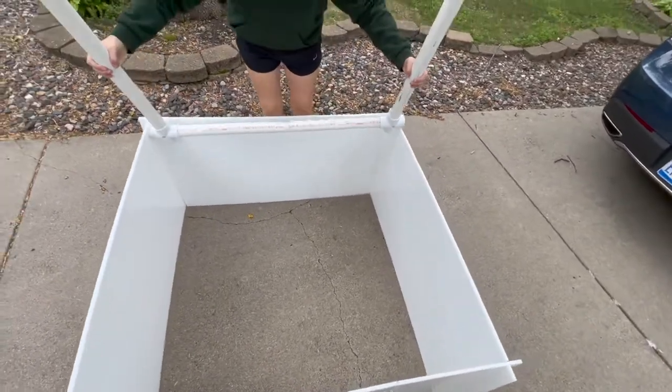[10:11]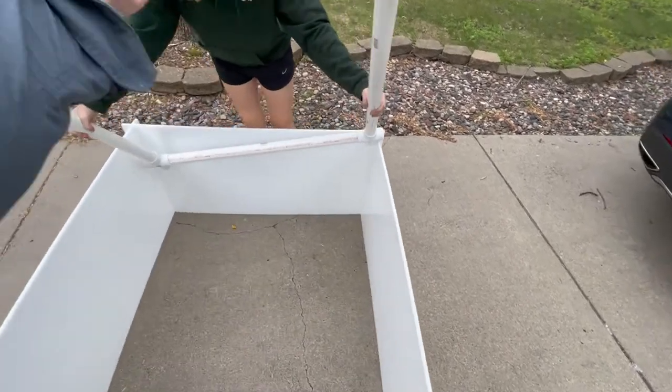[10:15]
You want me to help you or not? Yeah. Yeah, okay.
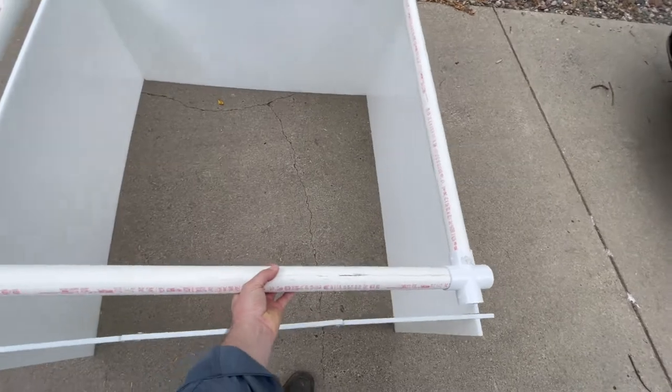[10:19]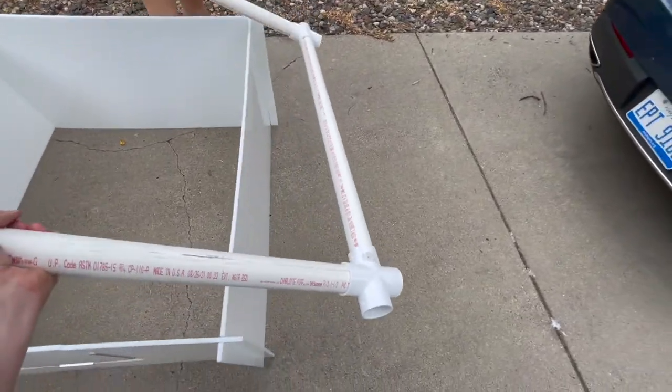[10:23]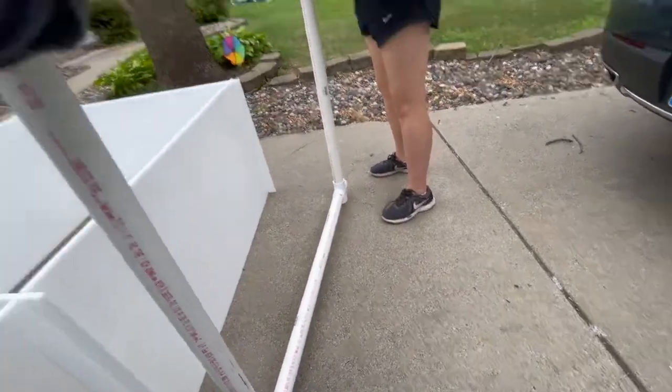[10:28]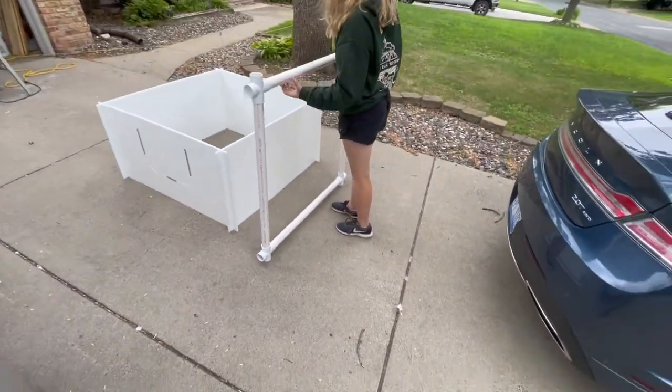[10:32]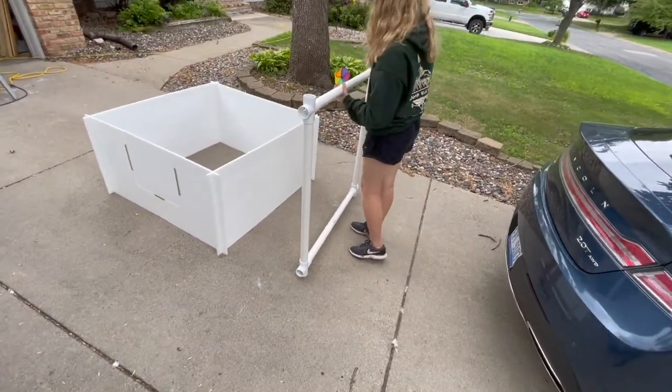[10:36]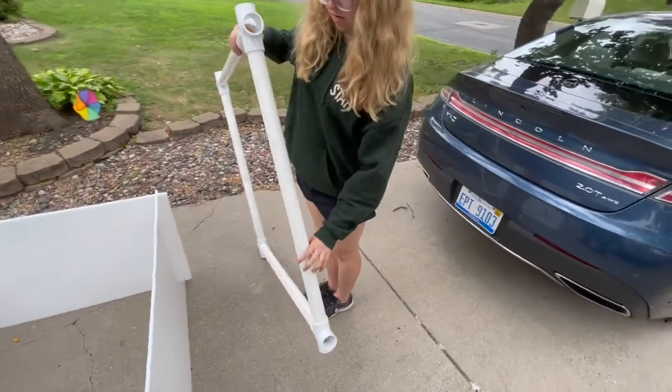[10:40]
So then what happens here is that we didn't put them together tight enough. So if that happens, you can just take it out like that. And you're just going to tap it on the ground like that on each side. And then that will get them together more. And then it will fit better, more snugly.
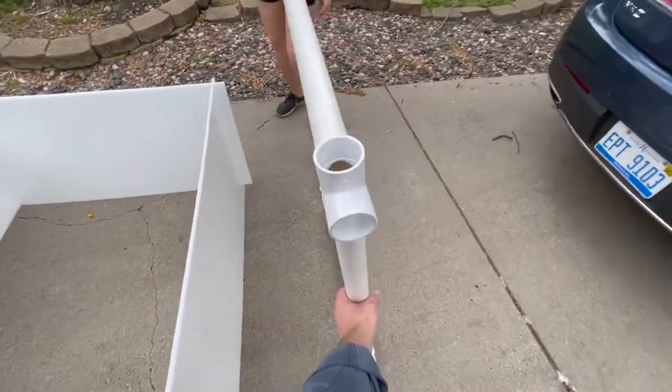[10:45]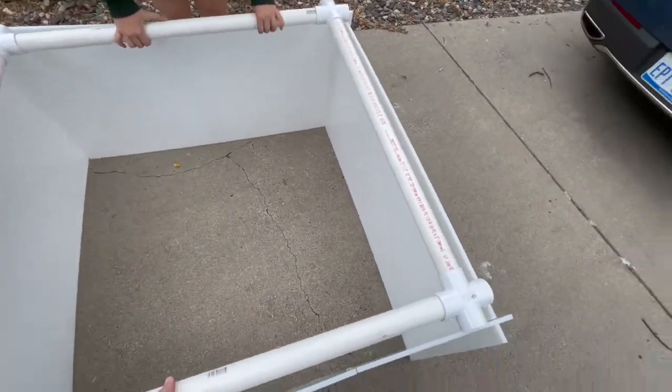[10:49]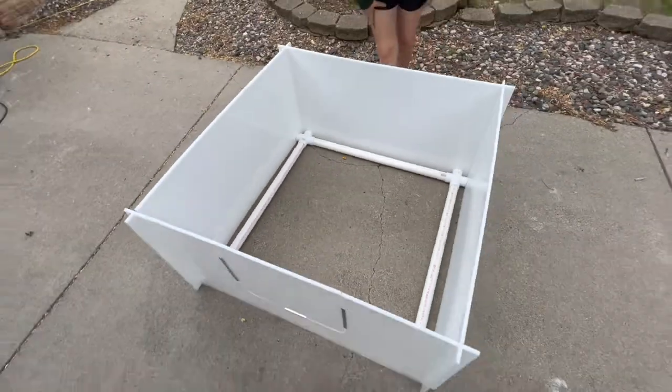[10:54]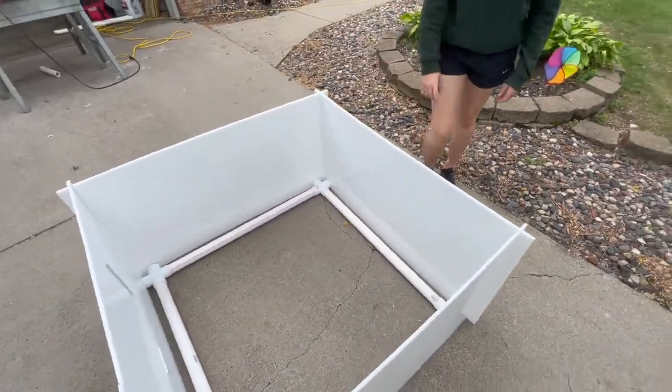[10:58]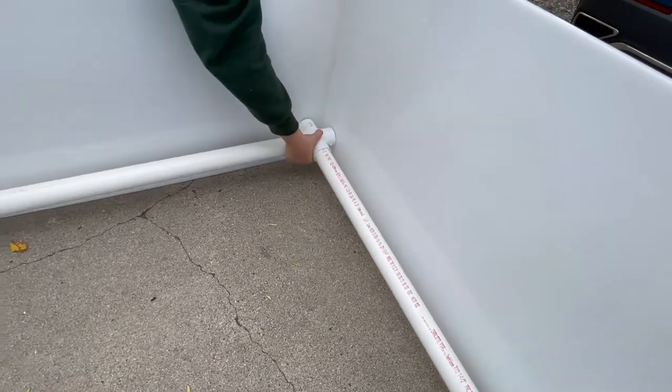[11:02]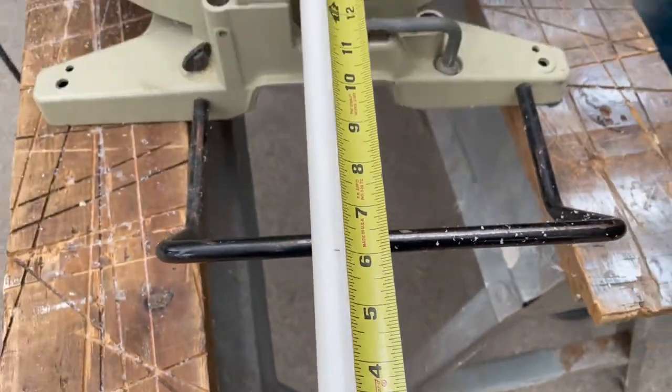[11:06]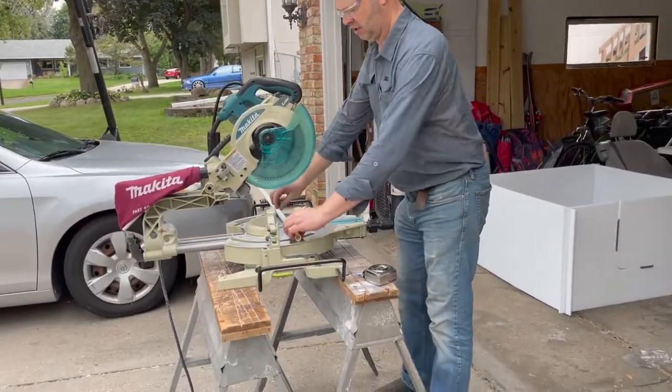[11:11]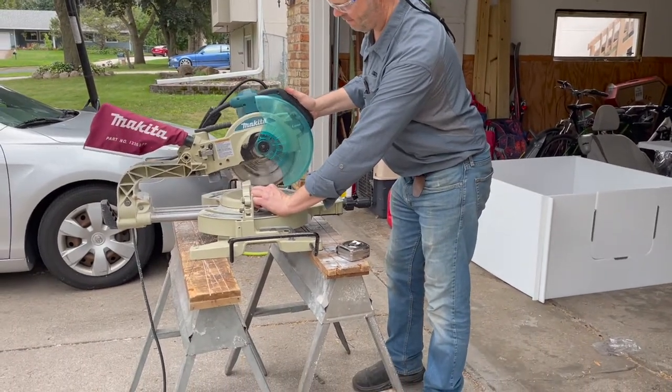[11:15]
Wow, like butter, huh? And now what we're going to do, now that we're done with the puppy rails, is make the feet of the rails that will go right under the cross fittings. So here we are marking at 6 inches, and now we're going to cut it down. And you're going to want to end up with 4 of these 6-inch poles.
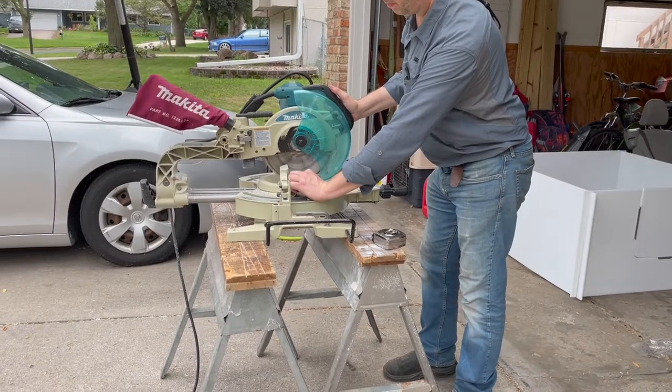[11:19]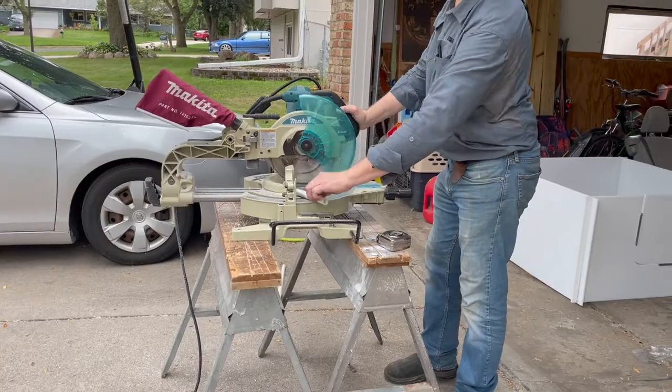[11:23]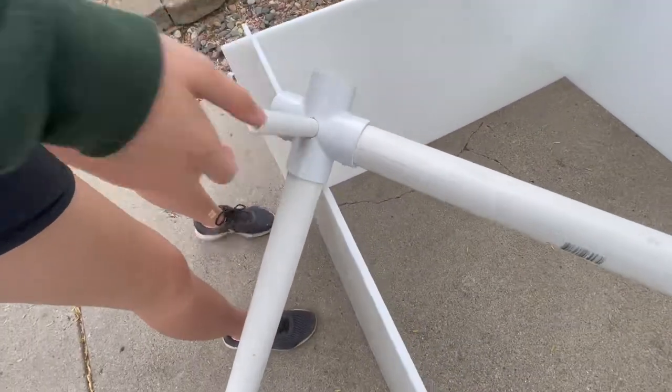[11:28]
Once your poles are cut, you can just slide them on in to the holes that we drilled into the cross fittings.
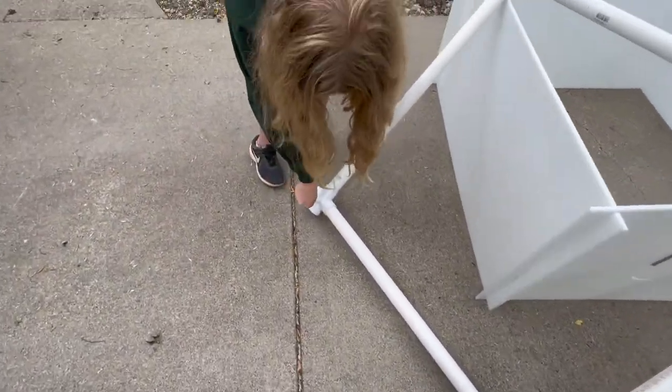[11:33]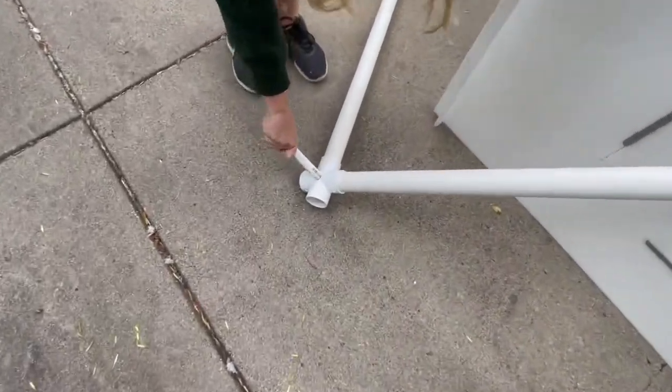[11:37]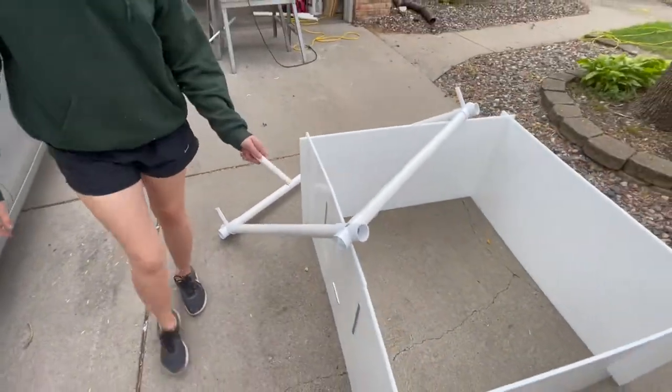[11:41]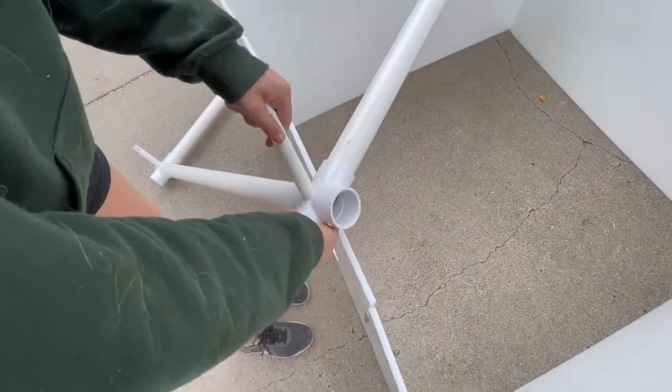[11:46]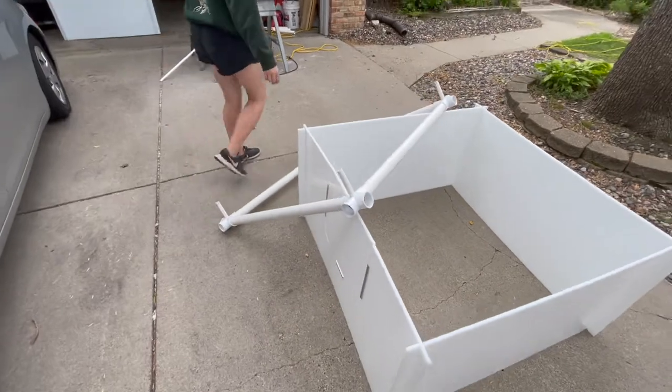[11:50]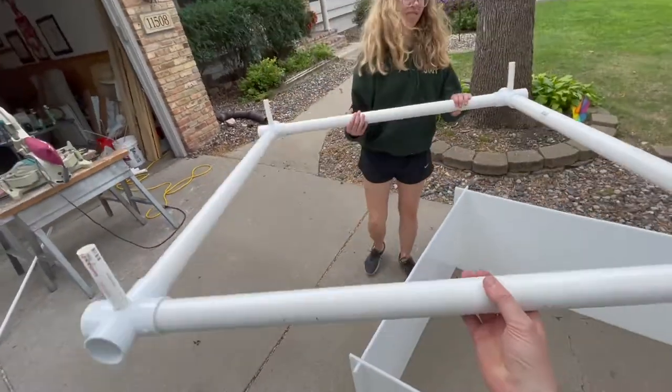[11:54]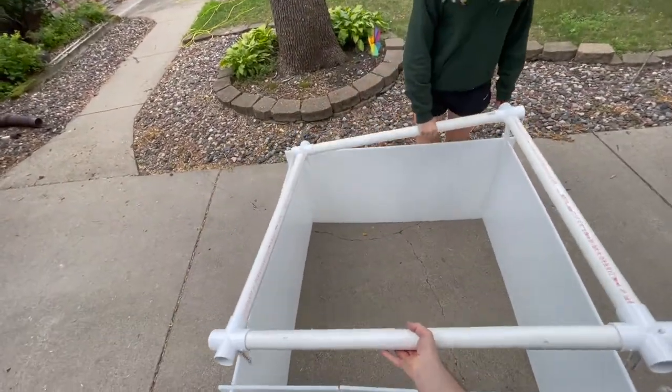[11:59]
You could sell these, you know. Go to whelpers.com. All right, let's put this thing in here. Can you do it yourself or you want me to help? No. Okay. Whoa! Baton twirling here.
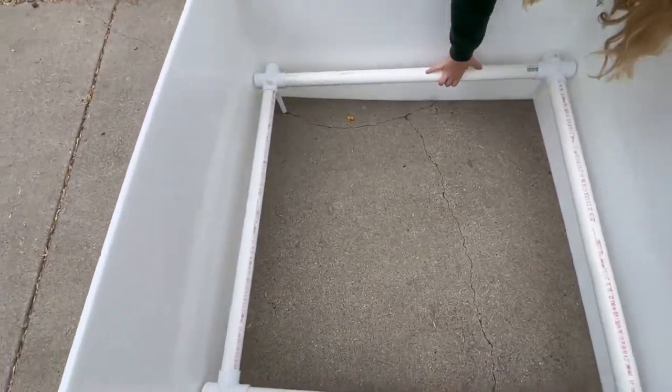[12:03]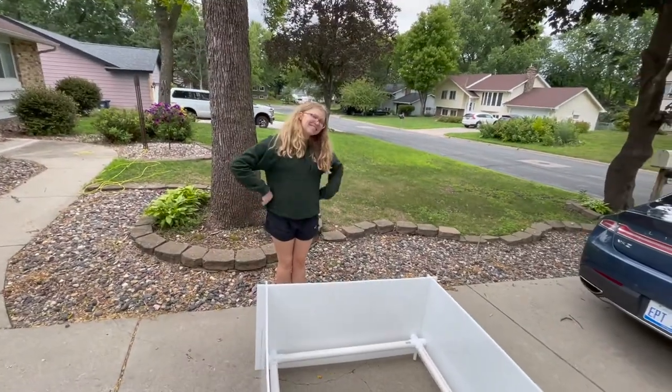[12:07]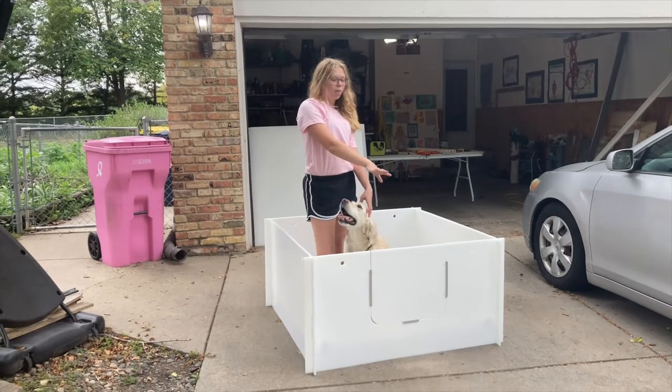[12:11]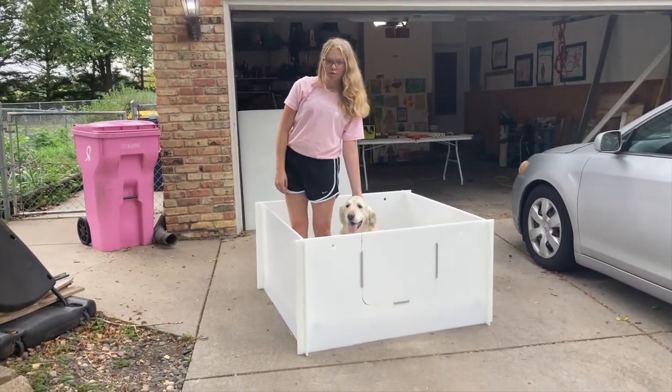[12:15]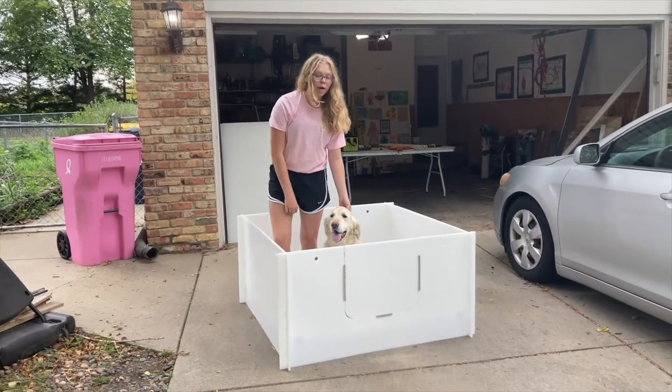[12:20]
So, once you're all ready to have your dog go in, you're just going to open the door and have them go on in. They might be a little scared first. So you can put some incentives in there, like treats or toys.
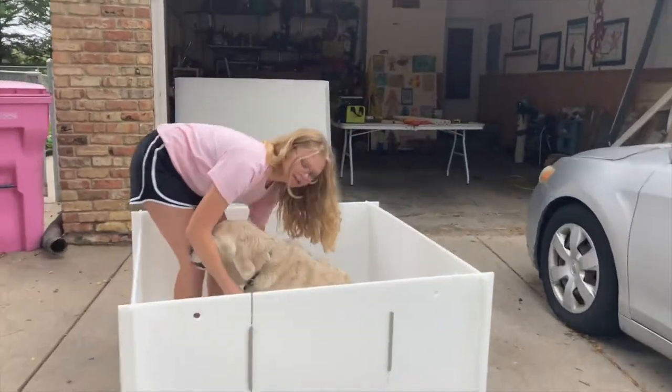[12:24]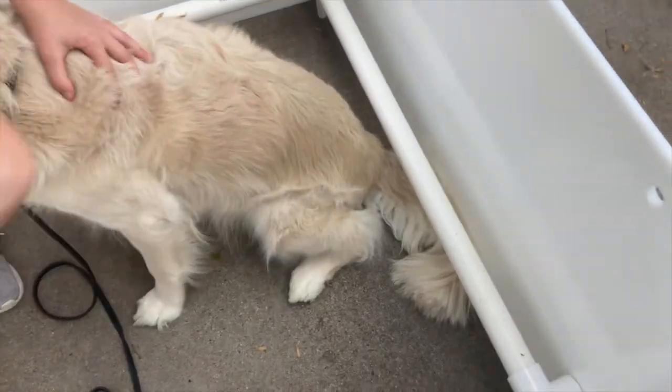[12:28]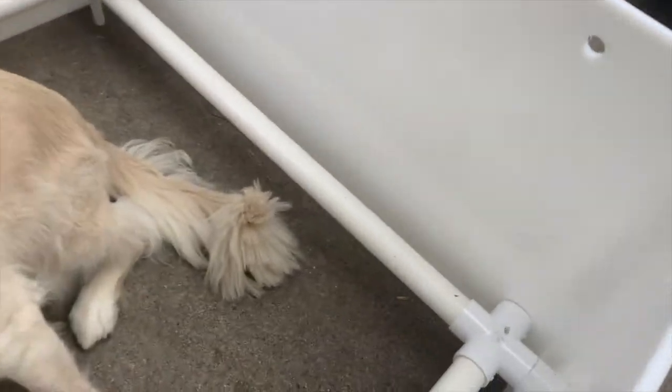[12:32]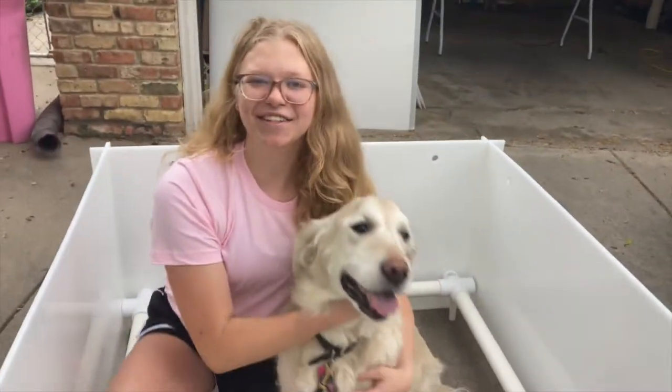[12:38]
And then if you come over here, you can see that even if your puppy, even if the mom lays down, the puppy rails are still wide enough so that she won't crush them. But yeah, that is how to make a puppy whelping box.